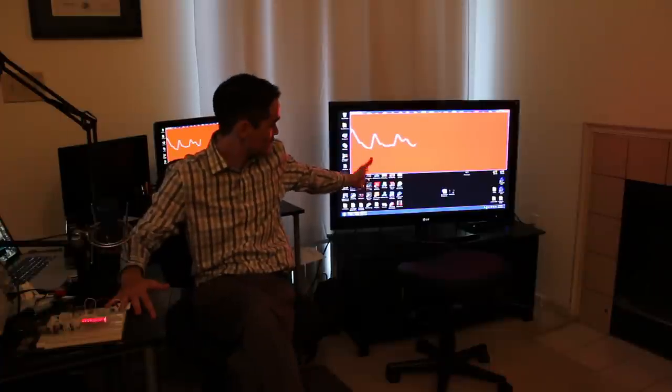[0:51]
Hey, what's up, guys? In this video, I'm going to show you how to build a circuit with an Arduino to monitor your heart rate using an infrared LED and detector. The idea is that the infrared LED shines infrared light into your skin, and as blood travels through your veins, the light is reflected back and detected by the infrared detector. So it's a pretty cool circuit, and let's test it out.
I'm going to lay my finger here across the LED and detector, and then we should see my heart rate. Down here, I have some LEDs that correspond to my heart rate. That information is also transmitted to the PC here, where we're running a Processing sketch. And then, of course, it goes down the HDMI cable to the TV up here, so you can see everything here. So it's really cool.
It's a cool project involving a lot of components, and I'll break it all down for you: the detection, the amplification, the filtering, the Arduino part, everything, including the Processing sketch. So let's take a closer look at this circuit and see what's going on.
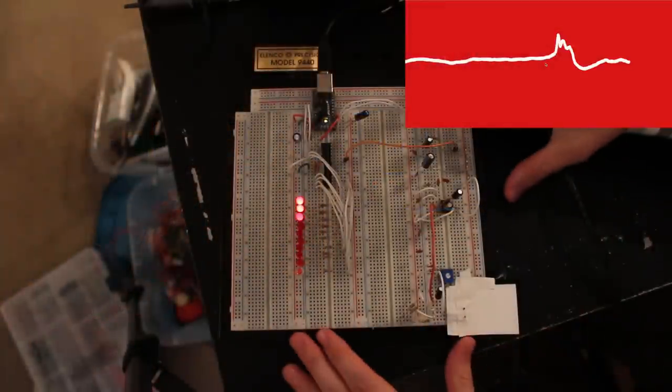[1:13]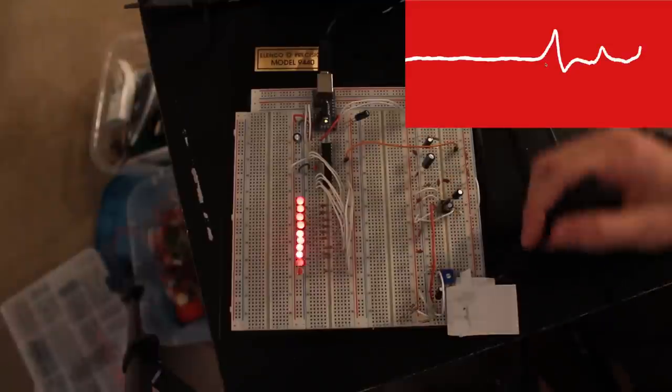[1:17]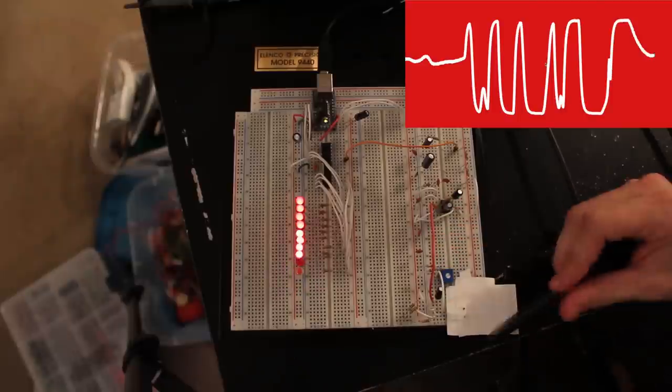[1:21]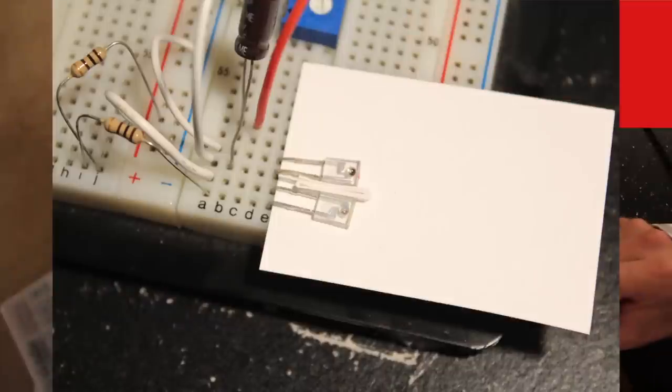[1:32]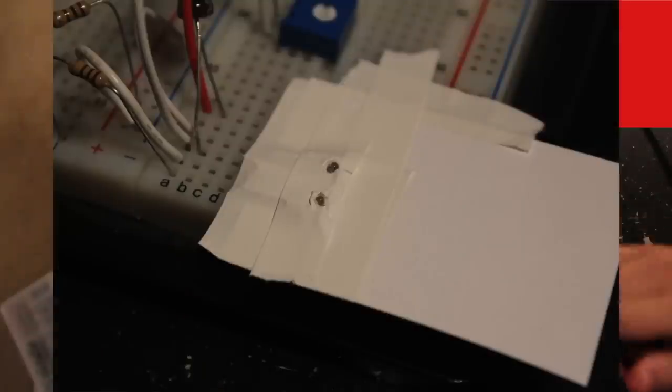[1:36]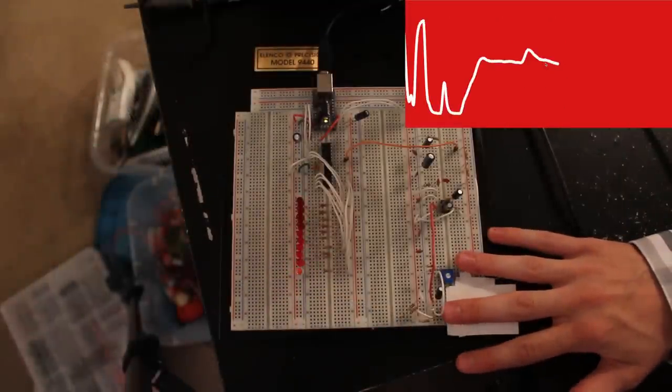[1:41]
Okay, so here's the circuit. And like I said before, there's not too much to it. It's pretty simple. Down here is where you put your finger; this is the infrared LED and detector. It's all taped off like this so that the detector only sees reflected light back from the infrared LED. There are two holes here: one is for the detector, the other is for the LED. It's all taped off to get rid of any ambient infrared light that might be picked up. And it's not perfect.
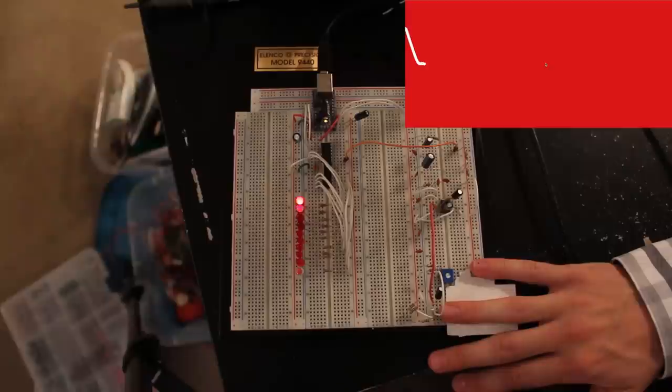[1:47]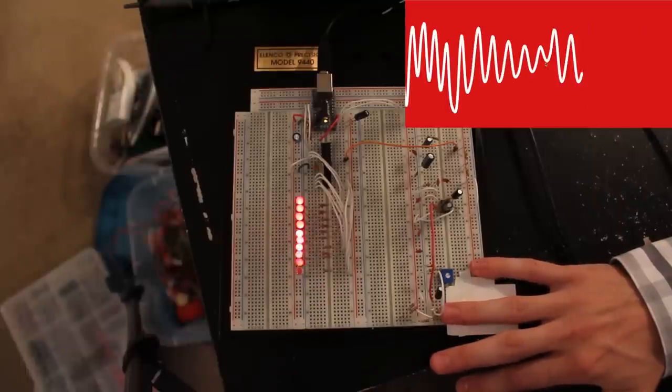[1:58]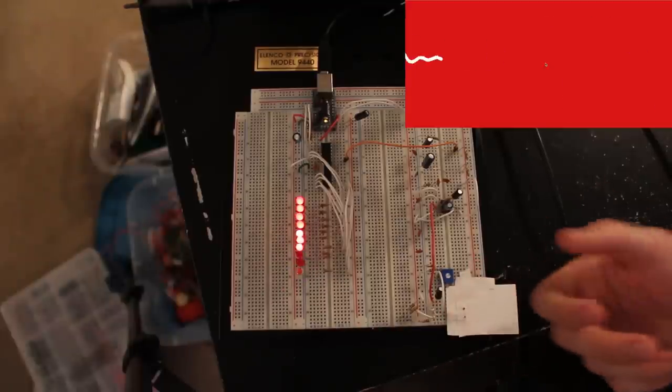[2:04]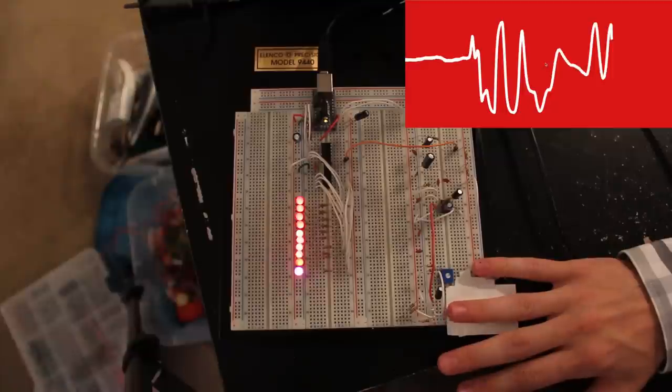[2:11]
If I actually get a lock on the measurement, you can see that. Okay, so it's locked on. But it's not a perfect setup here, because even if I bounce my finger on it or apply varying pressure, it goes crazy. So maybe a better way to do this would be to put this circuit on a clip somehow, so that you would have constant pressure applied and get rid of that variable. Even if I lay my finger here, if you're bouncing around, it's not perfect.
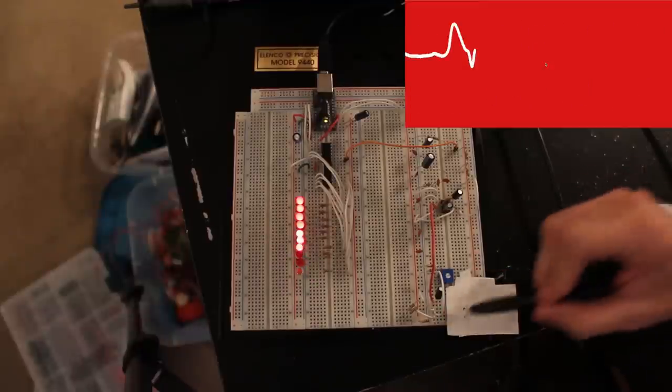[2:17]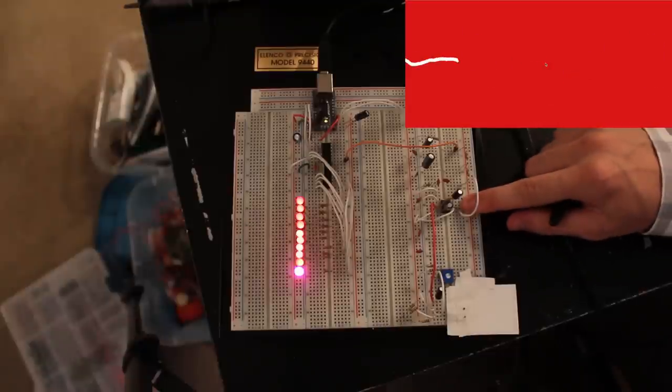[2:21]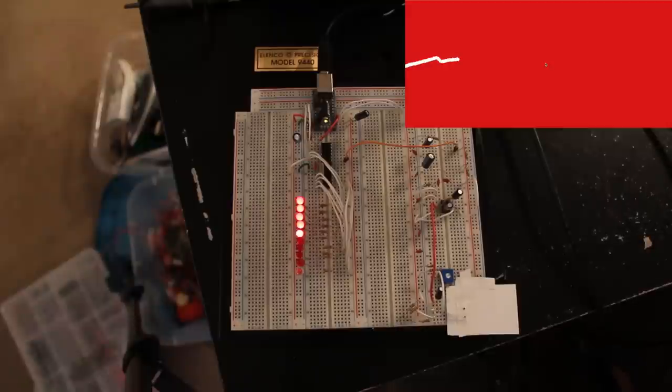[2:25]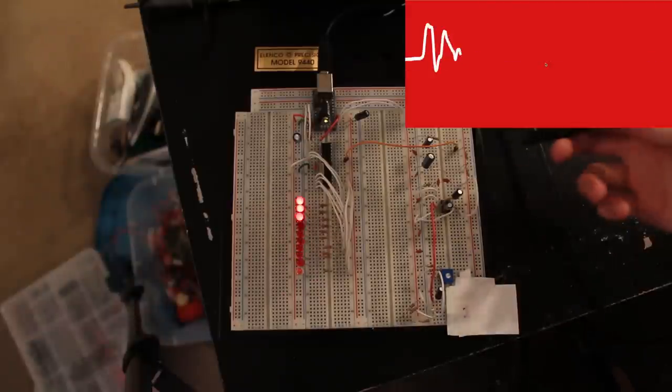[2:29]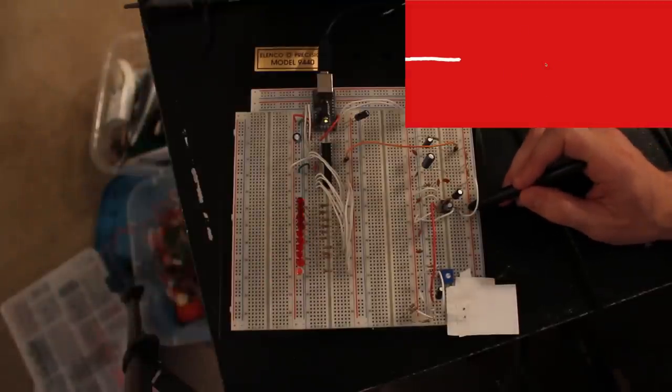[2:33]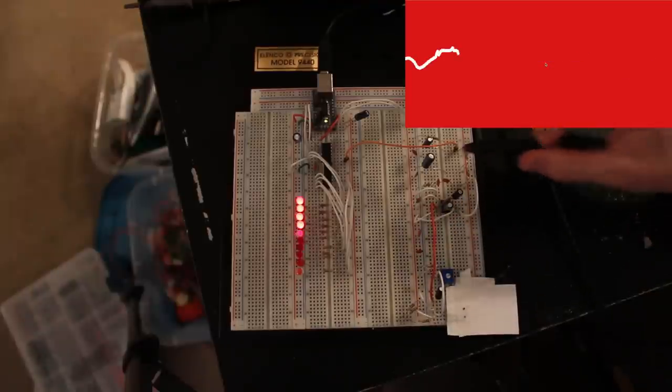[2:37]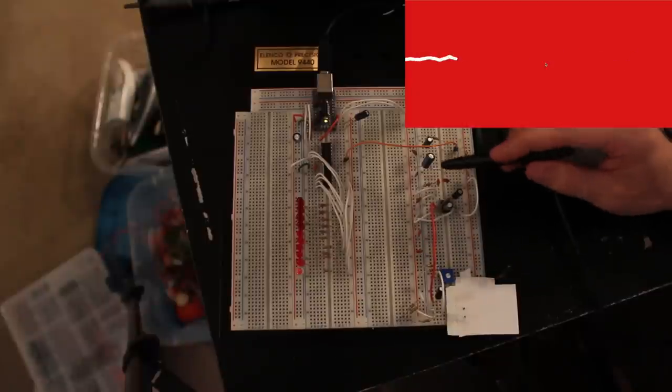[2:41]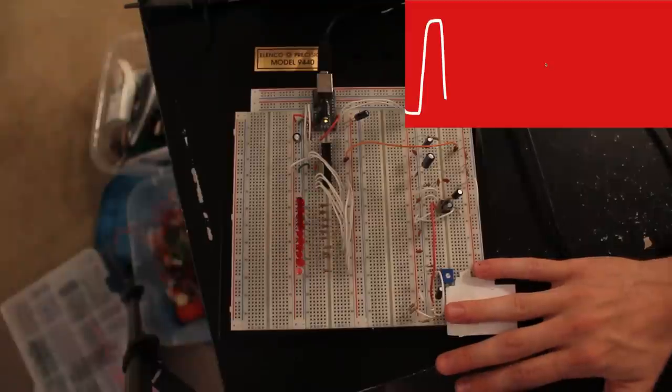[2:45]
But anyway, the output of that then goes over to an LM386 amplifier. This is a pretty cool amplifier. Usually it's used for audio applications, but in this case it works great. This was directly from my whistle detection circuit. So it goes into that, then it goes through a two-stage low-pass filter here. The corner frequency of each of these is about 16 hertz, and your heartbeat is slow, so it's perfect.
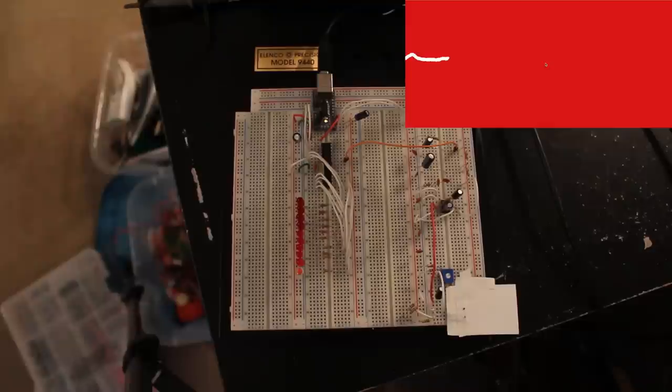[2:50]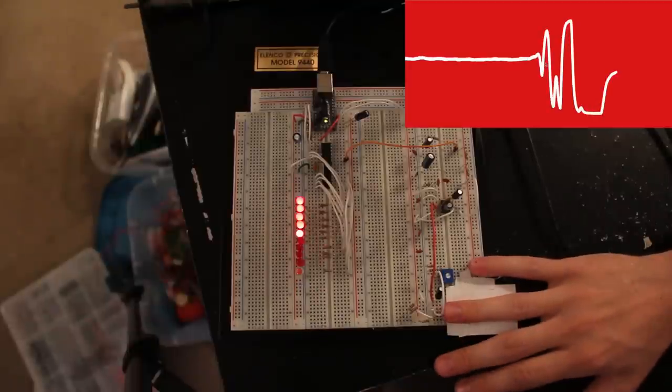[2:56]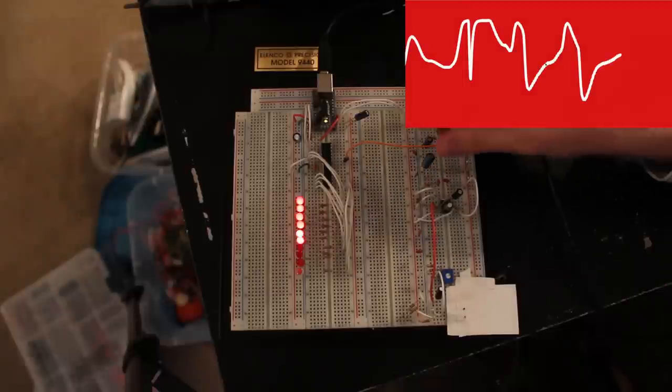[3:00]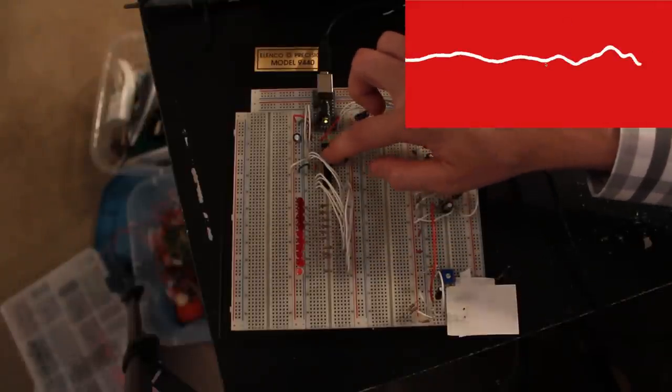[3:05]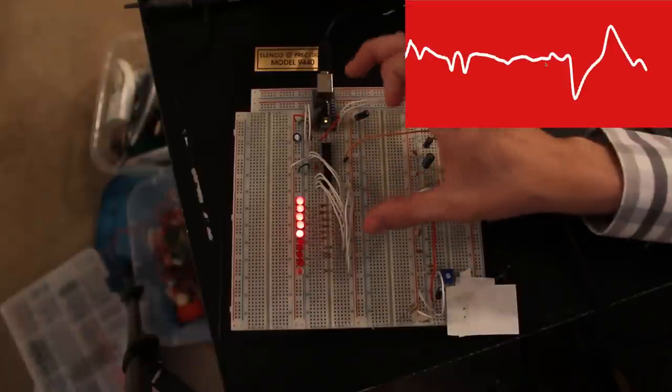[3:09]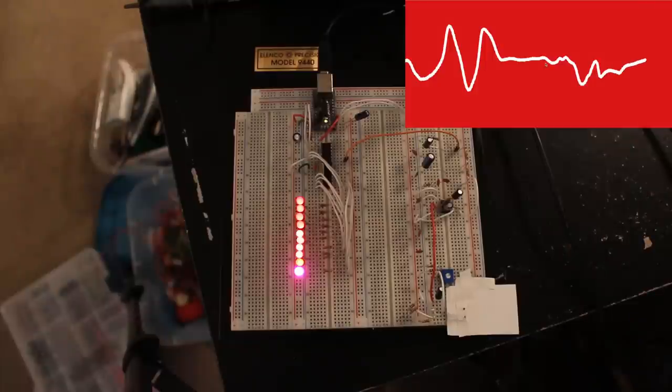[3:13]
One thing you should know about infrared light that's given off in the ambient is that it contains a lot of high frequency content. So it might be kind of cool to show you that. But before I do that, the output of those two low-pass filters feeds into an analog input on a standalone Arduino over here. This is the same thing as your Arduino Uno board down here, except on a breadboard. And then we have 10 LEDs. Let me show you that real quick.
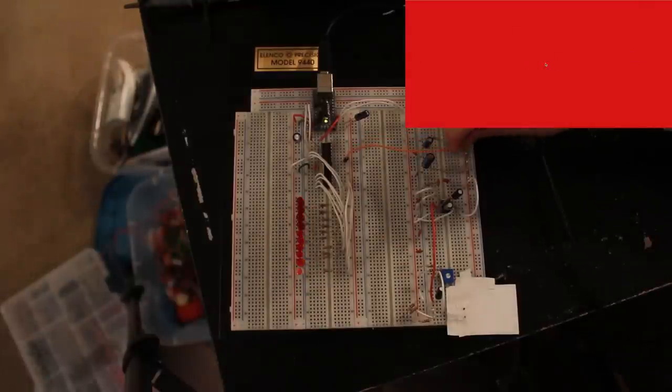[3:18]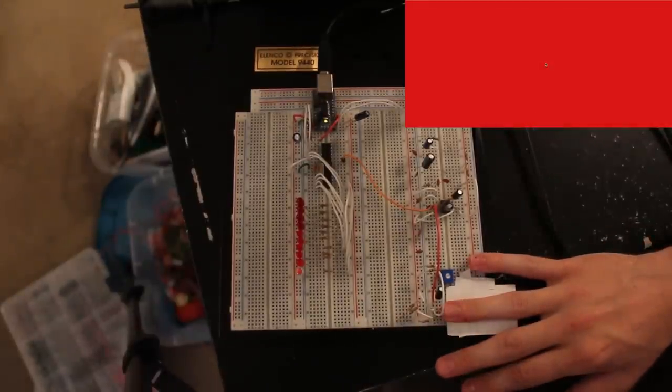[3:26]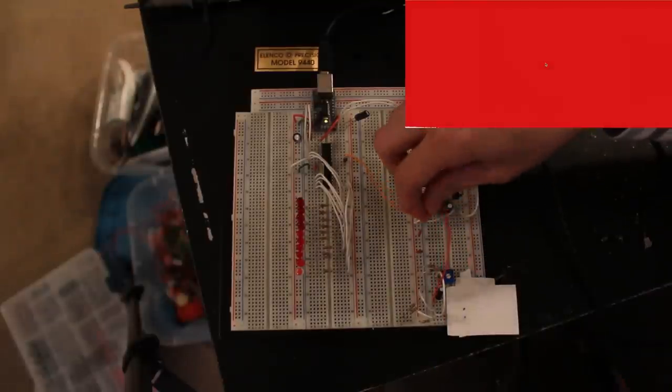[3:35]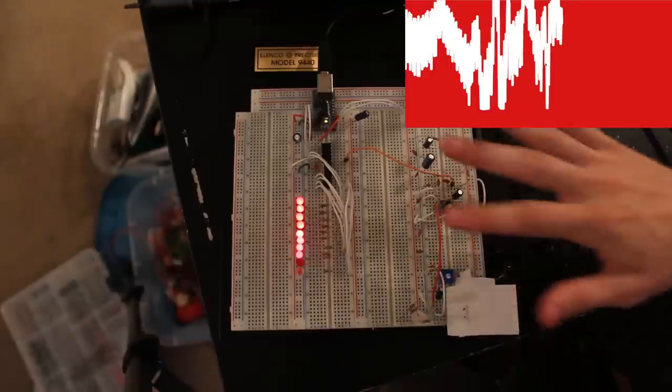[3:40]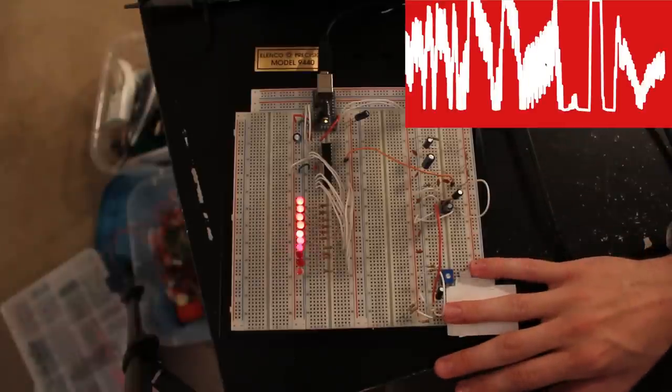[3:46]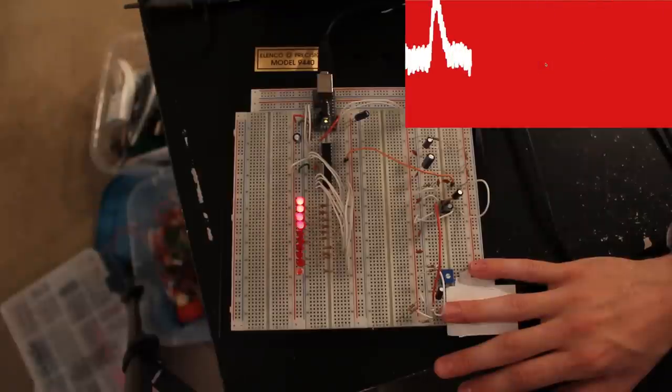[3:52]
Let's show you first the output of just the infrared detector. You can see it's way down there in the mud. You can't even really see it. So let's look at the output now of the LM386. By the way, I'm going to go to the whiteboard in a second and show you what the connections are. So here's the output of the 386, and you look at all that noise. You can sort of see the heartbeat signal in there, but it's just covered in 60 hertz noise.
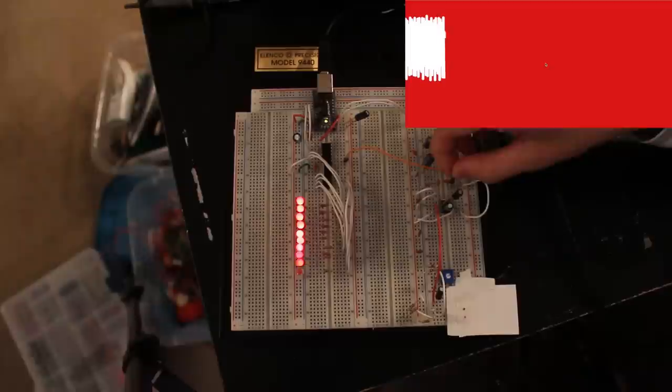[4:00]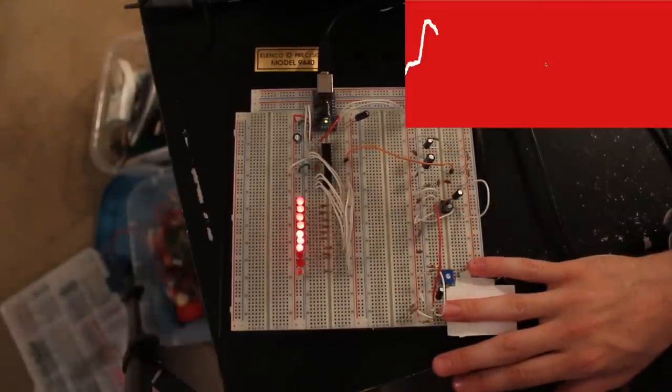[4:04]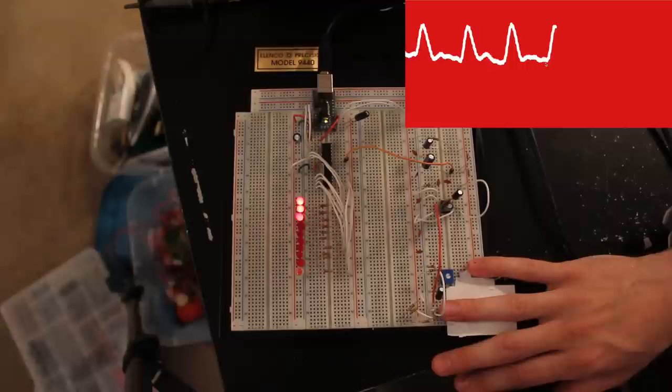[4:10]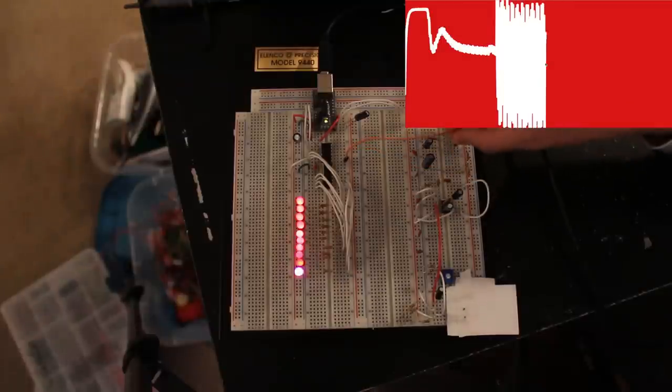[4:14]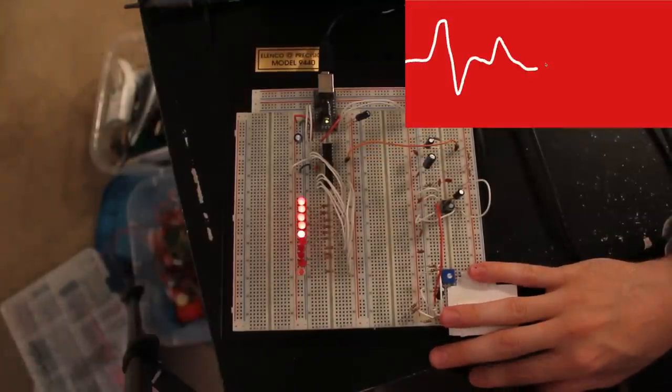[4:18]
Let's look at it after the first low pass. Now it cuts all that off, but you can still see it's a little jittery. It did a pretty good job of filtering most of it out, but it's still there. So I put it through a second low pass, and let's look at that. Okay, and that is pretty close to perfect, at least for display purposes. So it's not too bad. Anyway, that's the circuit.
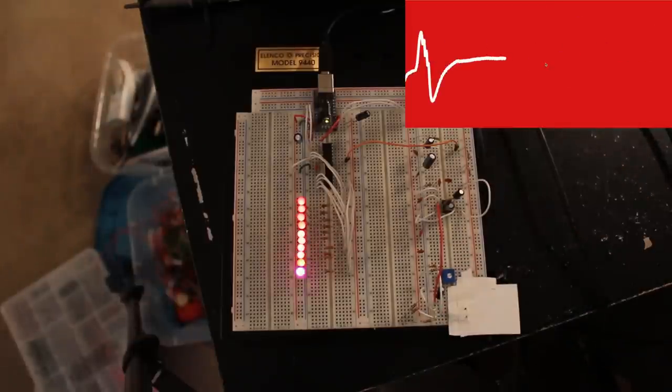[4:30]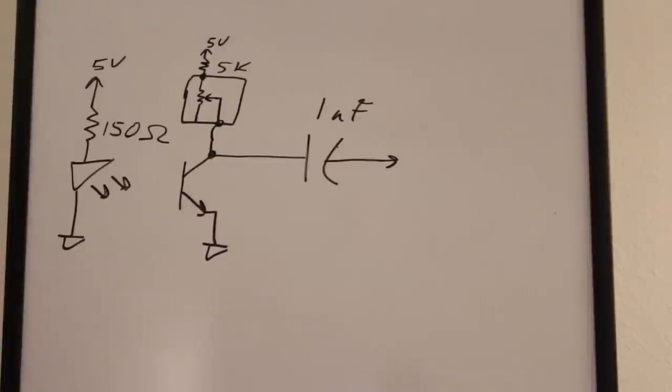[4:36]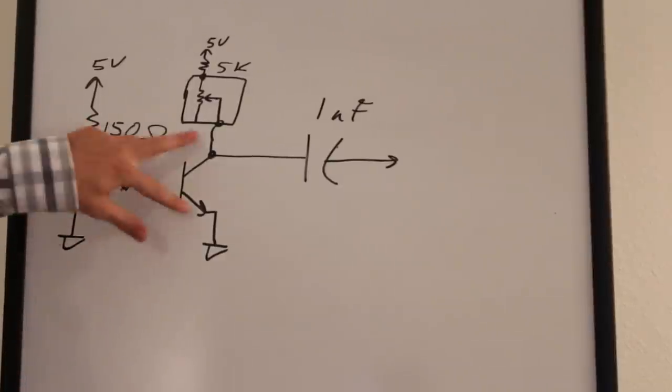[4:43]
Let's go to the whiteboard, and I'll show you some of the connections and how everything's hooked up. Okay, the first part of the circuit is the infrared LED and infrared detector. Each of these devices has two pins, with one lead longer than the other. You'll have to check the datasheet to see which pin is which, and I'll put a link to where you can find those parts in the description. The infrared LED is simple. We're just using a 150 ohm current limiting resistor.
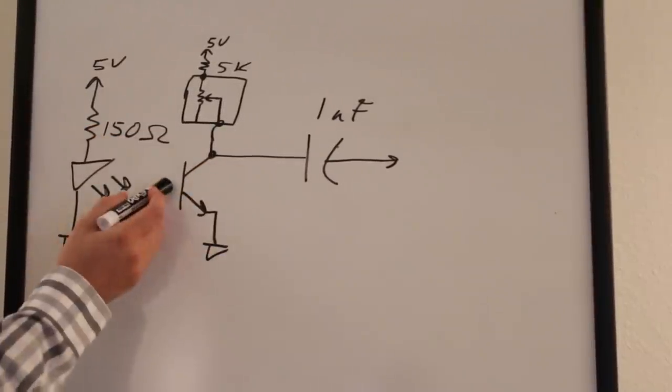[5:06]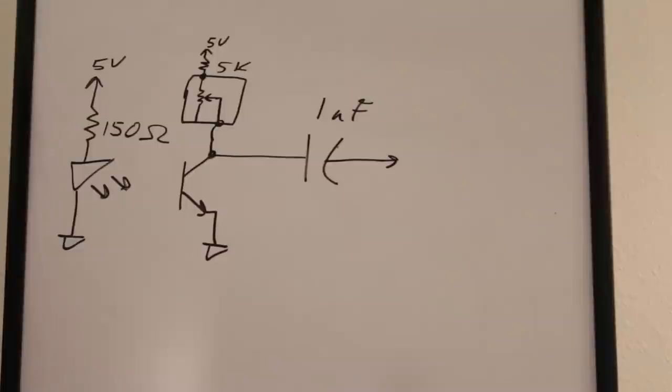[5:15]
The detector, is it again just two pins? It acts like a transistor, except the base is controlled by the amount of infrared light that it receives. Okay, so that's how it passes current through from the collector to emitter.
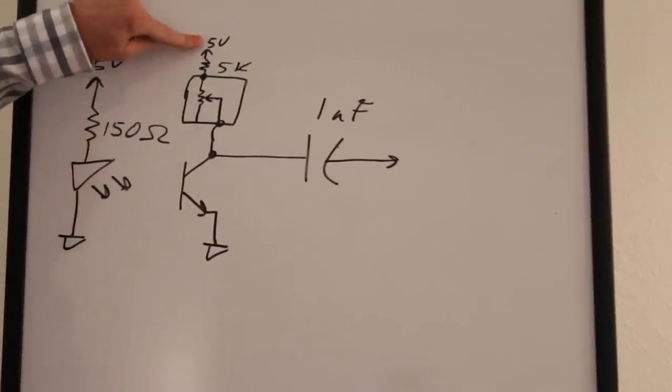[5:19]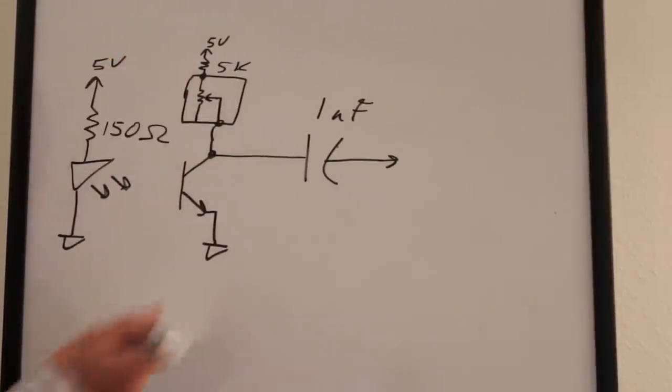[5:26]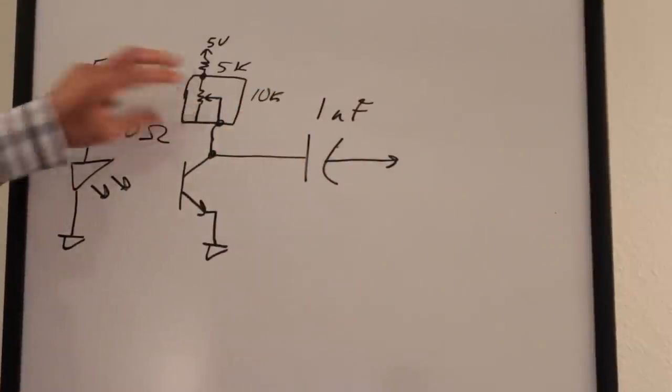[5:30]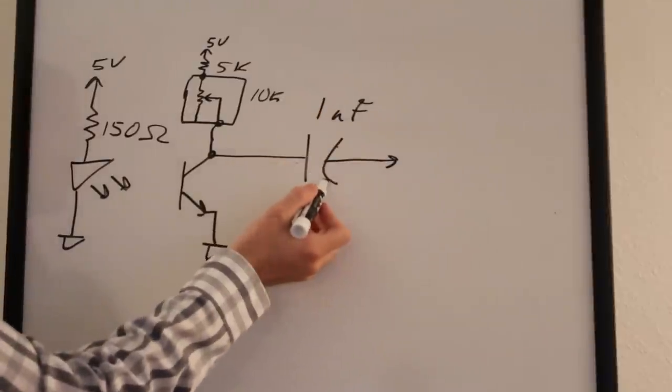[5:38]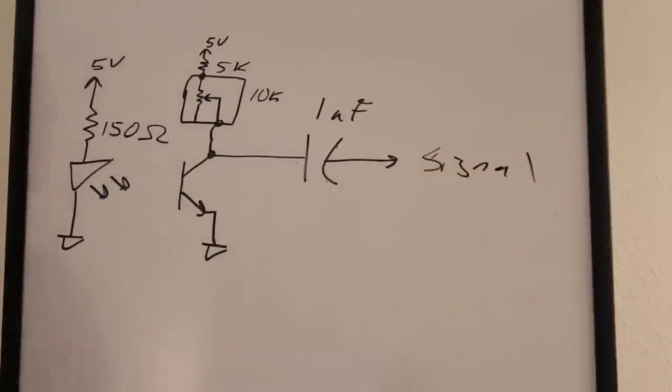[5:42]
So basically what we have here is 5 volts connected through a 5k ohm resistor through two pins off a 10k potentiometer. But since we're only using two pins off it, it's connected as a rheostat. And then from that, we're connected to the collector here, and then the output of this collector through a 1 microfarad capacitor. And then out here is our signal, okay?
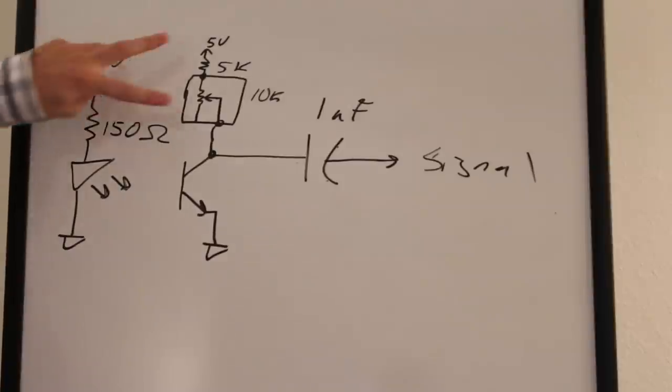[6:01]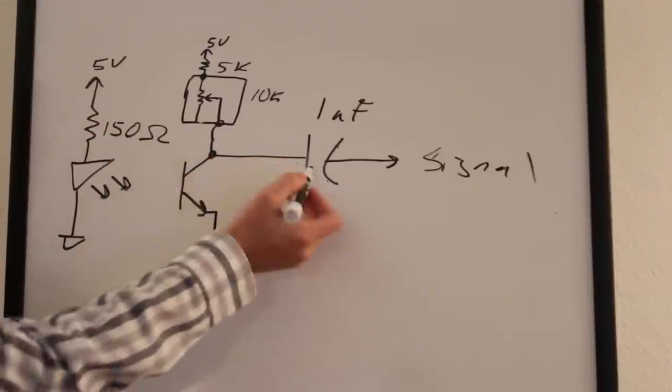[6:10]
Now, a few things about this. You can play with this resistor here, and that determines how much infrared light is going to be shined up into the skin. Just be careful you don't exceed the maximum forward current of this device. You can play with the resistor settings here, and that determines the sensitivity of the detector and your signal here. And you can also play with the capacitor here.
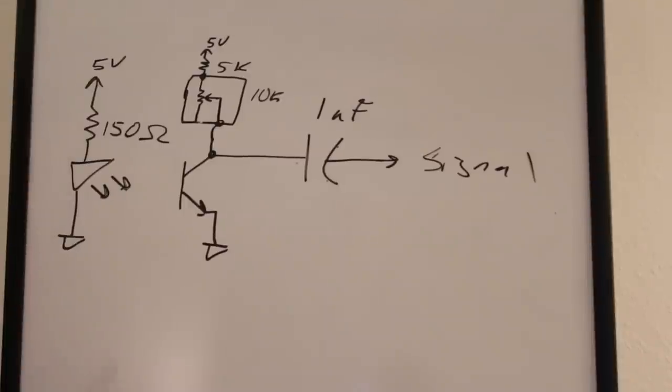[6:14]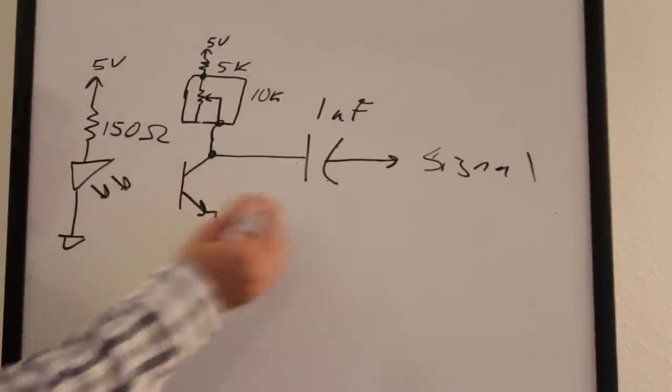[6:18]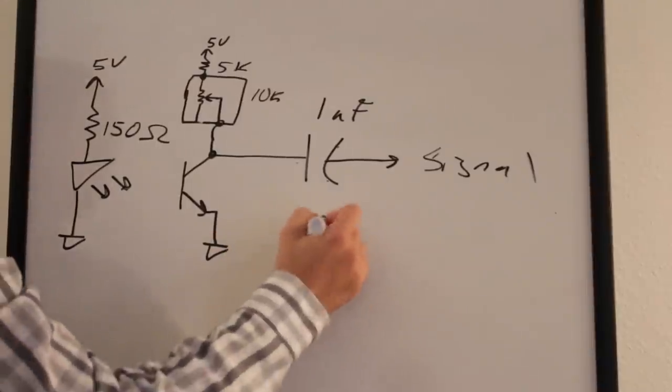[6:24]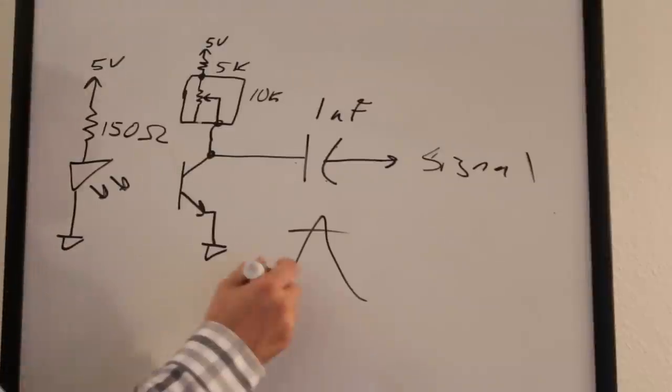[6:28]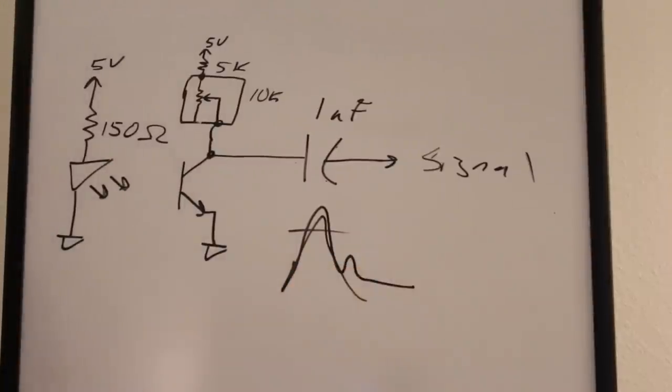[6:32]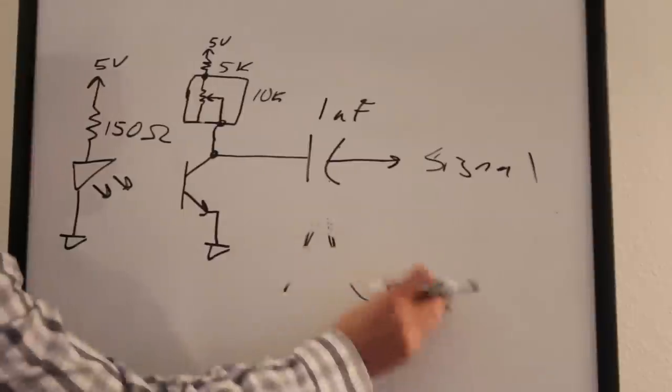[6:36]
So it's kind of a trial and error game until you get the perfect combination of parts here to get a nice solid signal. Now, if you only care about just the peaks of a heartbeat, then that's one thing. If you want a more defined signal so that you see the rise and then that second little hump, then that's going to take some fine tuning. So that's pretty much it on the infrared LED and detector. Let's move on to where this signal goes next.
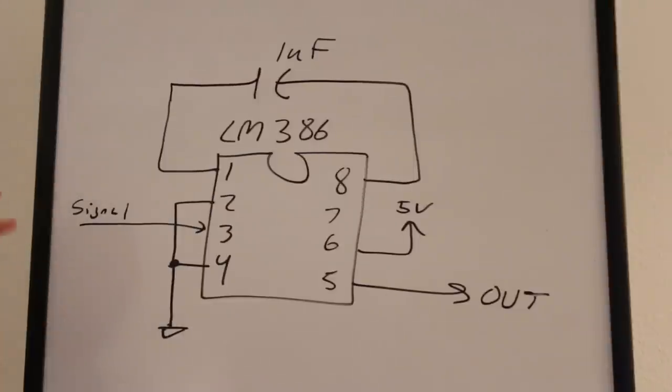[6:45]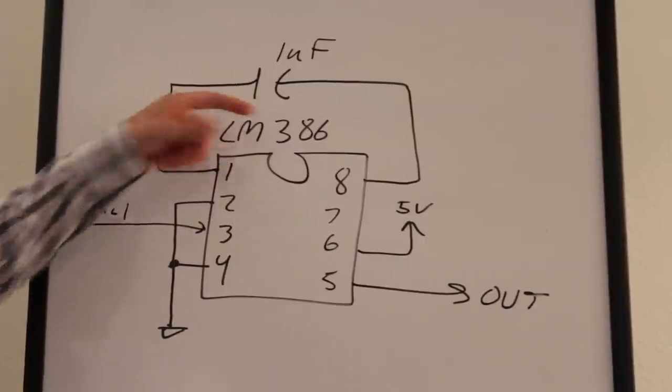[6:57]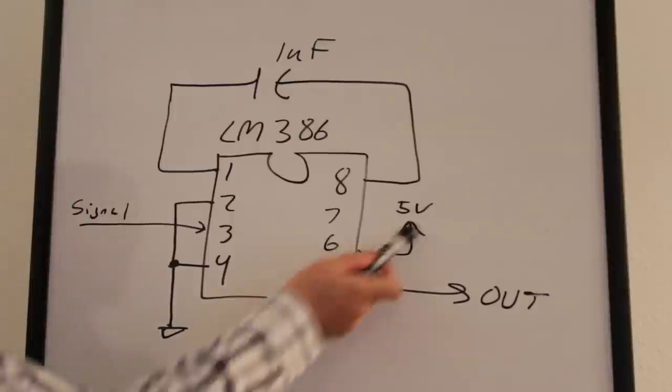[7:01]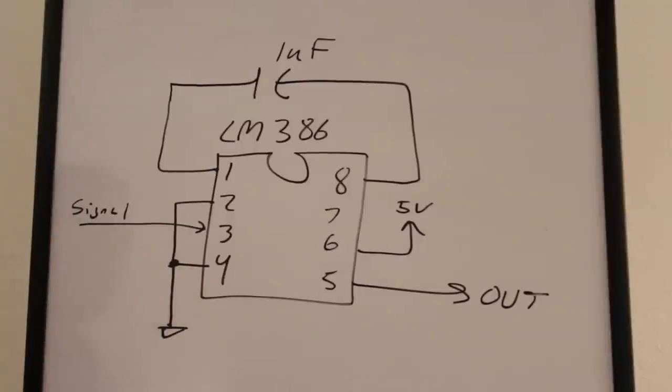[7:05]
Okay, then that signal enters into the LM386 amplifier. It enters in on pin 3, pins 2 and 4 are grounded. Across pins 1 and 8, we put a 1 microfarad capacitor, and this gives the amplifier a little extra boost. Pin 6 is up to 5 volts, pin 5 is your output, your boosted up signal.
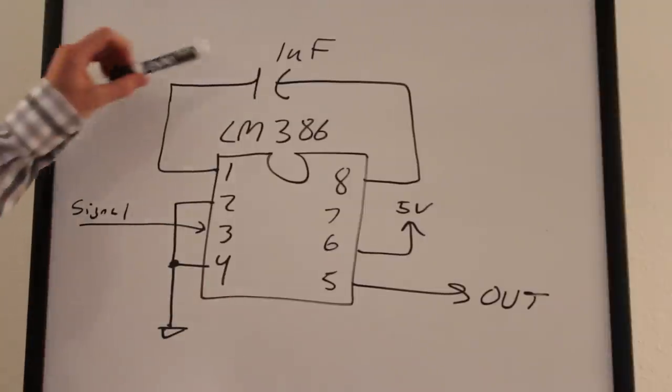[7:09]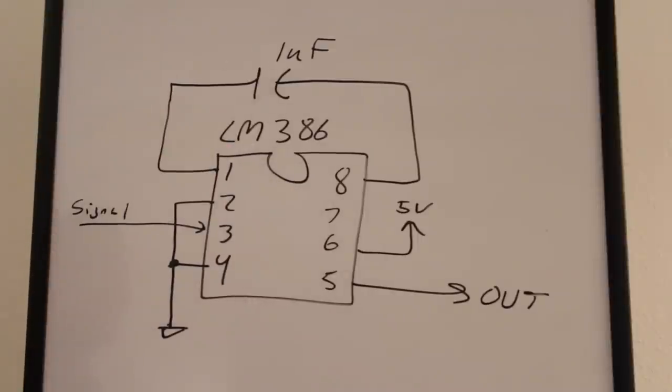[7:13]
A couple notes about this. You may be able to play with the capacitor you put across 1 and 8. You could bring that up as high as, I think, 10 microfarads. I think anything beyond that, the thing is going to be a little unstable. Or you could even try it without a capacitor there.
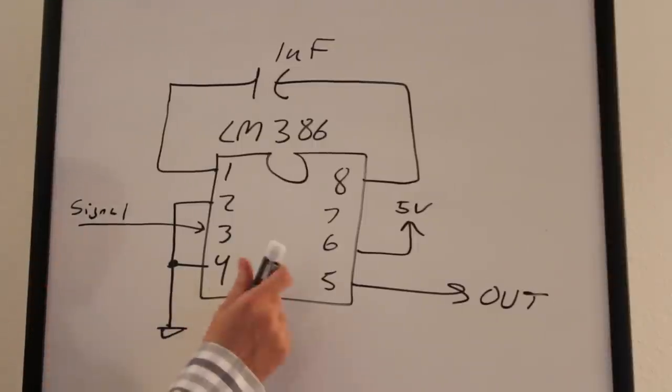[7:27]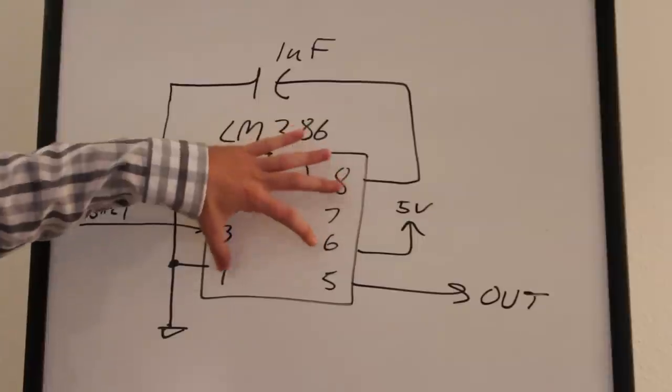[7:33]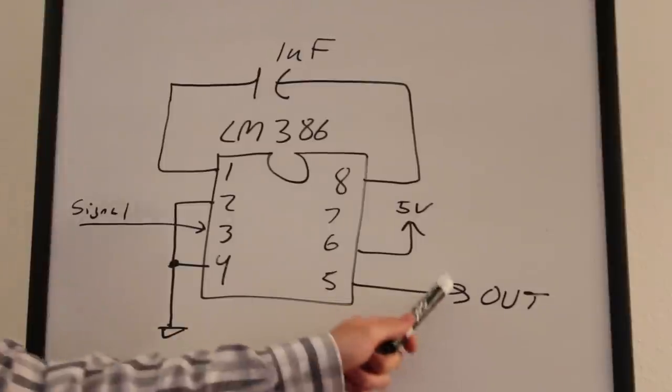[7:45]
Also, you want to make sure that you have a huge bypass capacitor system across pins 4 and 6. Right across these pins, get as close as you can to these with a 10 microfarad, a 1 microfarad, and a couple 0.1 microfarads, just to keep the power supply quiet for this device. And that's pretty much it. The output of this signal now goes to the filter circuit.
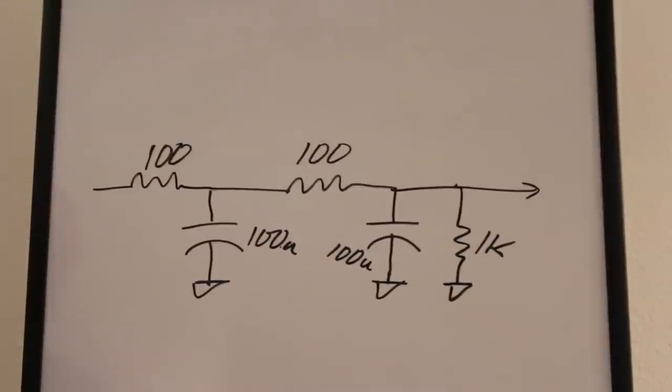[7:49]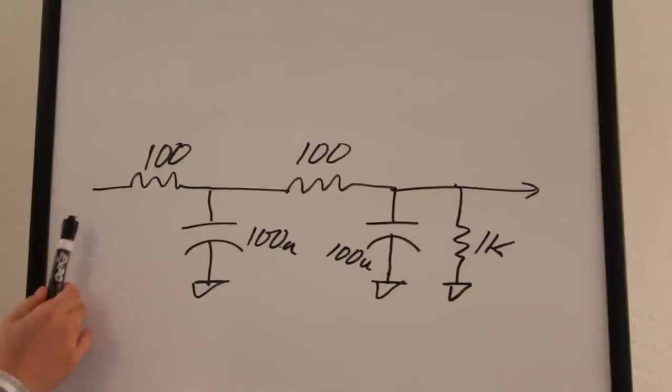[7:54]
Okay, so this is the filter circuit, and the signal enters in right here, and we go through two low-pass filters. This is the first one, this is the second one. And the corner frequency of each of these is about 16 hertz. So 1 over 100 times 100 microfarad times 2 pi will give you about 16 hertz.
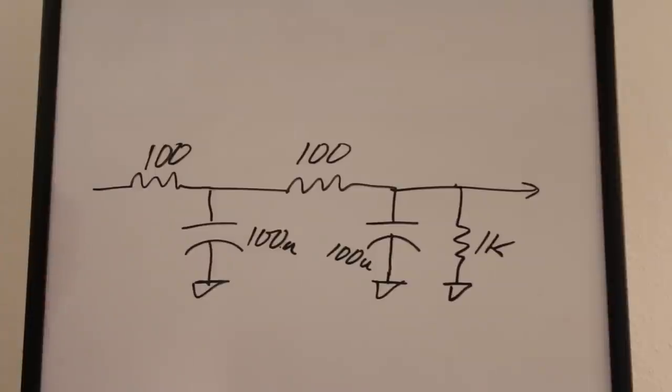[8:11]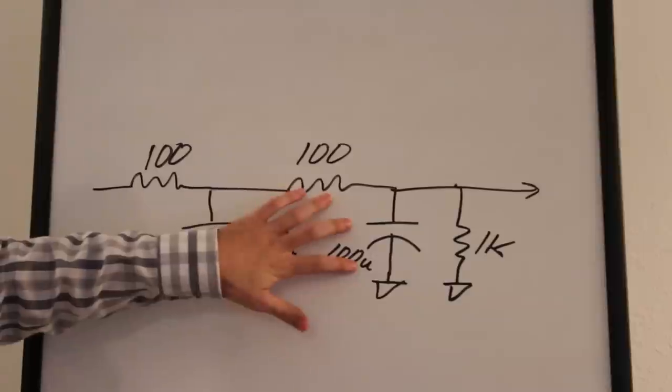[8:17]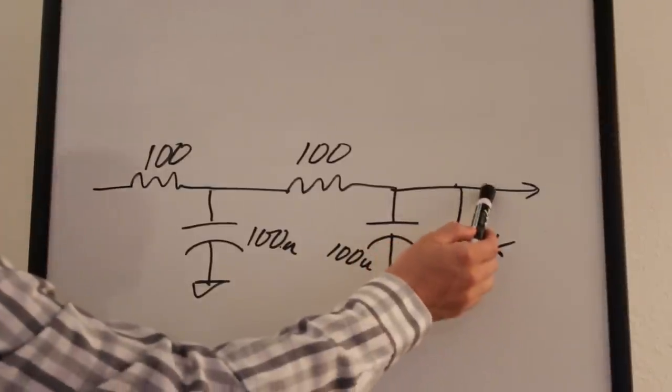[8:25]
And if you want to learn more about low-pass filters or just RC filters in general, I made a video a while back on that. I'll put a link in the description. So we go through two of these. And then I put a 1K over here just to give a little bit of load impedance to this, because this feeds into an analog input on the Arduino, analog input 0. So anyway, that's the whole circuit.
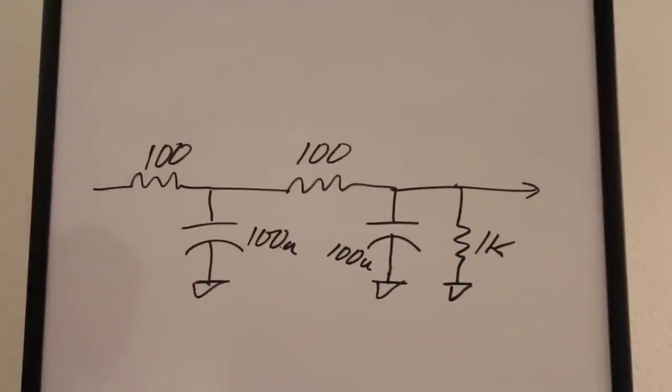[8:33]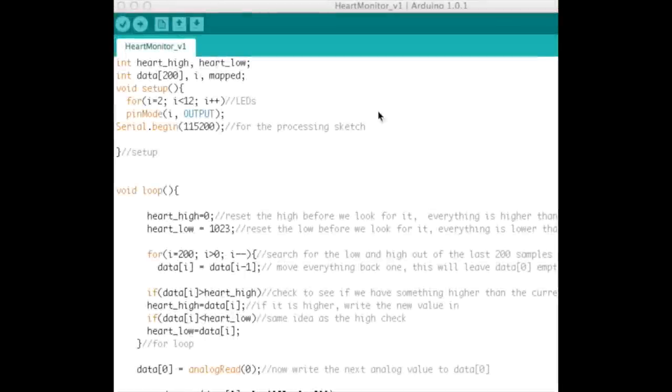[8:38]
And now I think we can check out the code. Okay, so here's the code, and it's pretty straightforward, and I'm going to break this up into two parts. The first part is going to be the Arduino side, and then the second part of the code will be the processing code, which is that cool application that displays the heart rate on the screen.
So first we'll talk about the Arduino, and it's pretty straightforward because right now at this point, we have a nice clean analog input to the board. So you're basically done, but if you want to do something cool with it, I'll explain that here. So first part of the code here, a couple variables, no big deal. We're going to set up 10 LEDs as outputs. I probably could have multiplexed those, but since the Arduino is only doing one thing, I could use all its pins up. And I was being lazy.
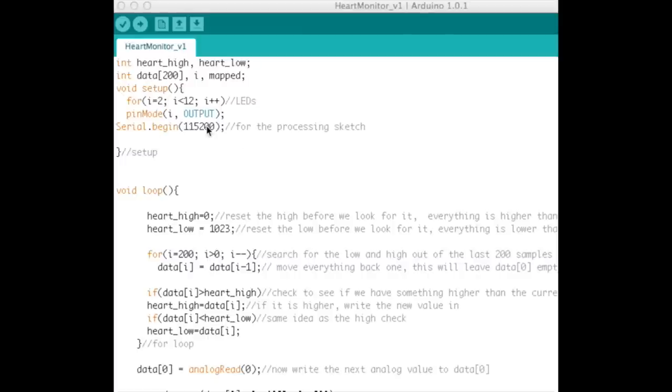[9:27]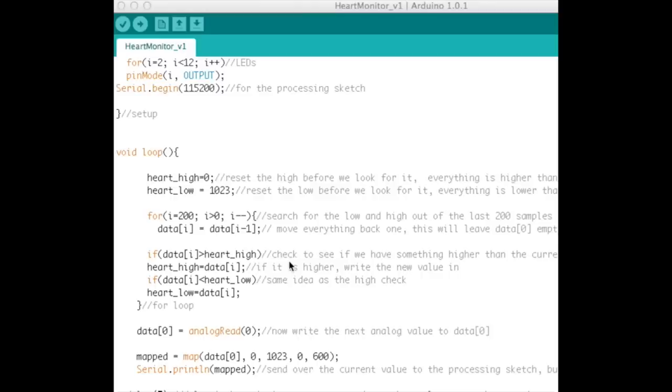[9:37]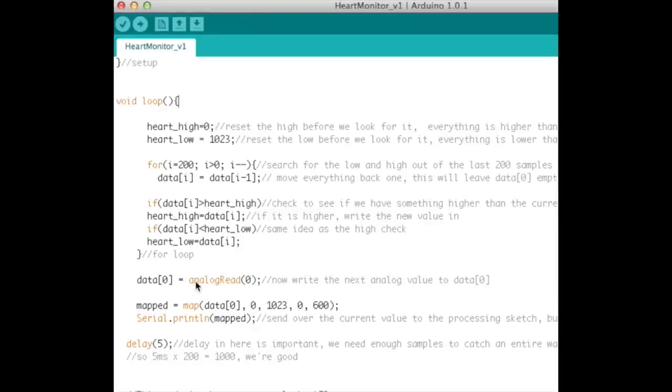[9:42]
So next part, we set up the serial port at 115.2, and this is to send data up to the computer so that we can read it into that application and display it on the screen. That's all there is to the setup. Then we jump into the loop here. So we're going to read in this value for the heart rate, and it has a high and it has a low peak. It's not swinging all the way from 0 volts to 5 volts. It might just be swinging from like 4 volts to 5 volts.
And with those LEDs on the board, I want to swing it all the way from the lowest point to the highest point so that it's not stuck somewhere in the middle. So I want it to swing with the complete swing of the heartbeat. And that's what we're calculating here. So we have two variables, heart high and heart low. And then we do this little function here to search for the low point and the high point in the analog read from the last 200 reads.
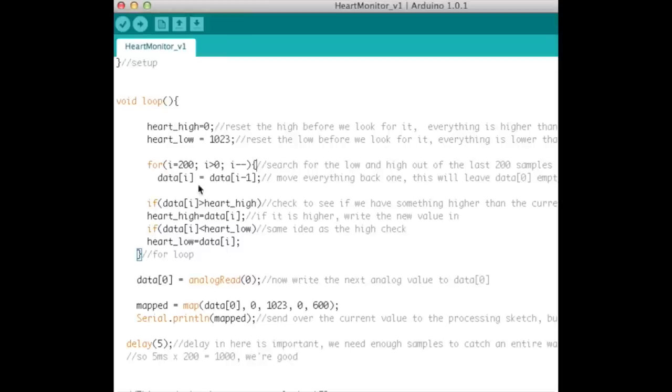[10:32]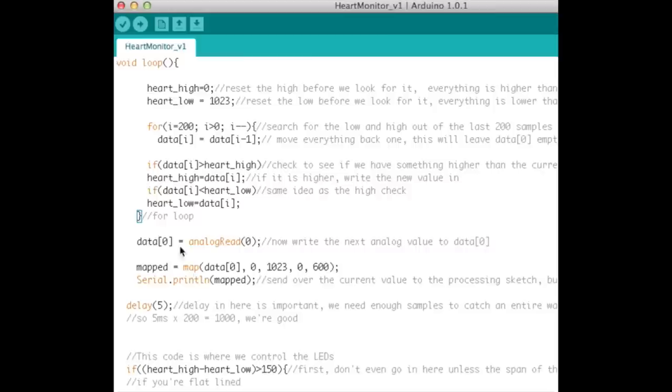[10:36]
Okay, you know what? I'm going to come back to this, because it'll make sense once you see how we do the read. So the analog read is here. We'll skip this and jump down here. So data 0 is equal to the analog read of 0. This is the actual analog signal that's fed into the Arduino. Then we map that value here.
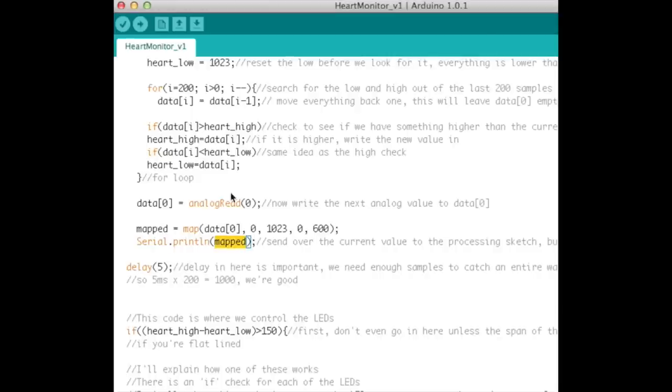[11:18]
So it's an analog value. It's a 10-bit A to D, and so we get a value from 0 to 1023. But we map it from 0 to 600 so that we do a serial dot print line of that mapped value. And this corresponds to the screen size on the other end. So its only purpose is to map it just for the screen on the other end. Okay, moving along here, then we do a delay of 5 milliseconds. And this delay is actually pretty important.
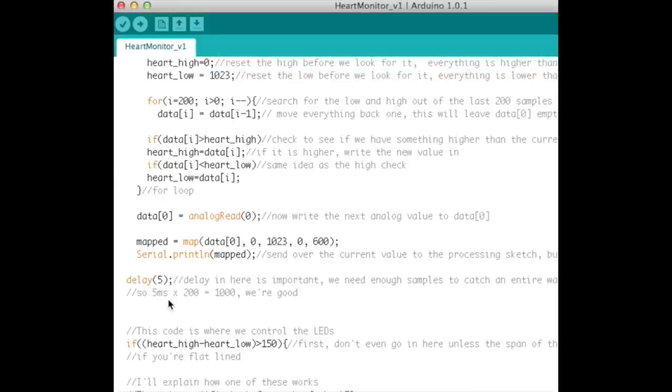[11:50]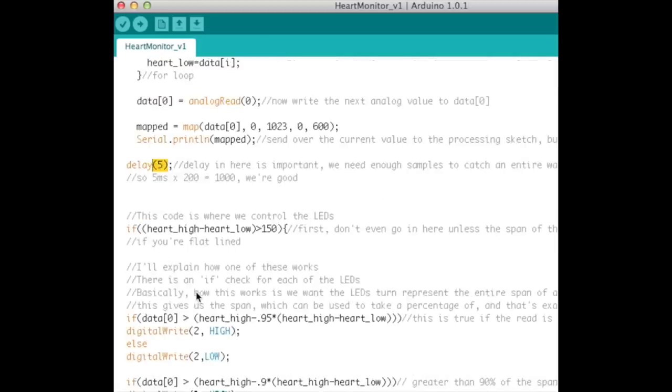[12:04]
If you just made this thing run as fast as you possibly could, then you would have 200 samples of your data very quickly, and it wouldn't be really representative of the entire waveform. So basically what I've done here is made it 5 milliseconds. We collect data after every loop of this thing, so that gives us 200 times 5, which gives you 1 second, so 1,000 milliseconds. And that was the whole point of this, so that we've got 1 second of a waveform, which should be the entire story we need, a high and a low. Anyway, I'm probably rambling here.
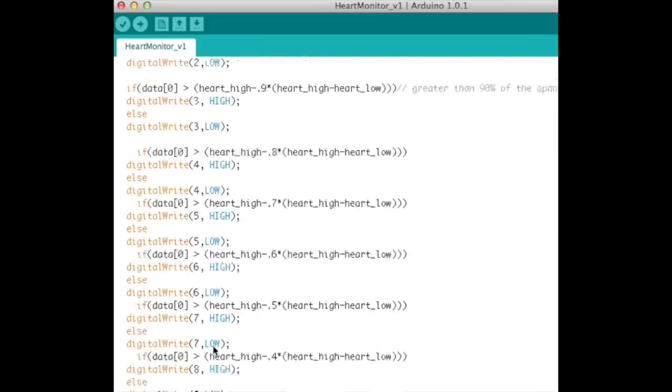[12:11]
All right, so down here we control the LEDs, but I'm going to skip that. So it goes in, it controls all the LEDs, and then it comes back here. So I wanted to show you that we store the analog value in data 0. Then we jump into this thing here. And this is for i equal to 200, i greater than 0, i minus minus. So this starts at 200 right here, but it's equal to the one right below it. So if it were going through this for the first time, it'd be data 200 equal to data 99.
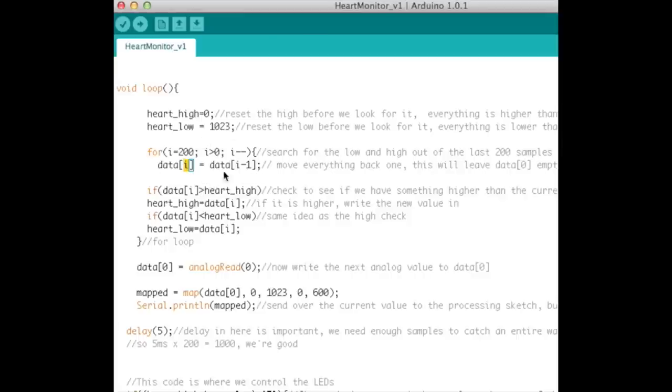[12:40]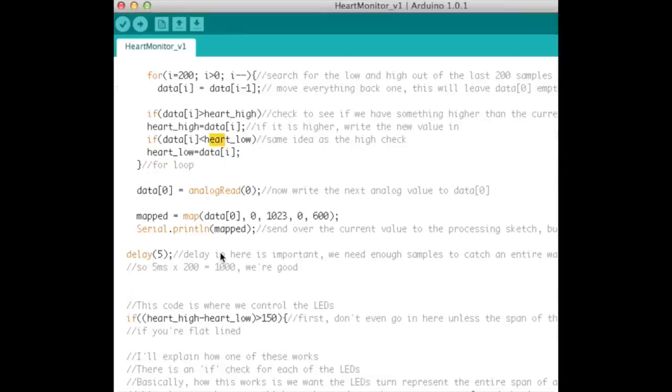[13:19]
So what's going through this thing is shifting everything up one. So the data in 0 is going to go to data 1. That's why here we store the new value in 0. So it's constantly shifting the data out, so it's always keeping the most recent 200 values. That's the whole point of this code. And the other thing it does is it also searches for the high and the low value within those 200 samples. And that's all it does here. So we get the high and we get the low. Now we have the span of the heartbeat signal. Okay, so that's how that works.
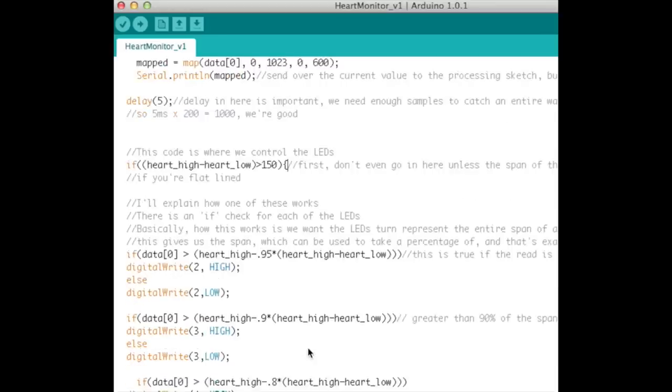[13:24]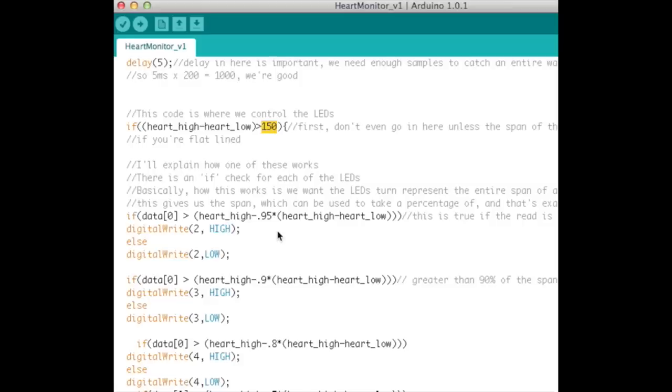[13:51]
And if we jump down here now, by the way, this code's commented pretty well. So if you just go through it, it should explain itself. Down here, if the heart rate high minus low is greater than 150, then jump into this. This is where we control the LEDs and turn stuff on and off. And the reason for this is so that when we're flatlining, it's not going to make the LEDs go crazy. So it needs a span of at least 150 counts, so at least something there. So it detects a heartbeat of something.
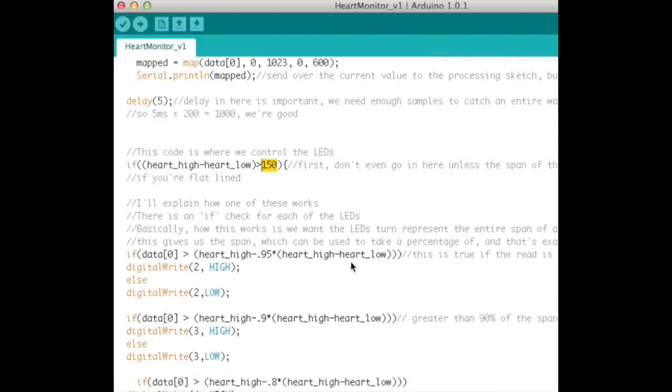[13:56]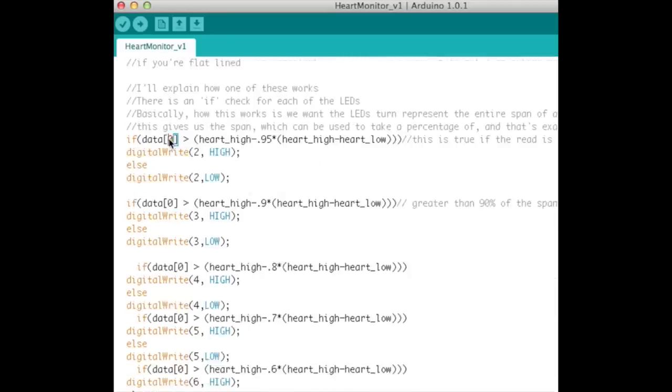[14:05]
All right, and then it goes through and controls all 10 LEDs, and you can see what the common theme between them is. So if data 0 is the current read off the analog input, if it's greater than heart high minus 0.95 times heart high minus heart low. So what we're doing here is taking the span, taking 95% of the span, and then subtracting that from heart high. So the point of this is, like I said before, it's not going to be going from 0 to 5 volts. It's going to be going like 4 volts to 5, or 4 volts to 4.5. So your span is 0.5 volts.
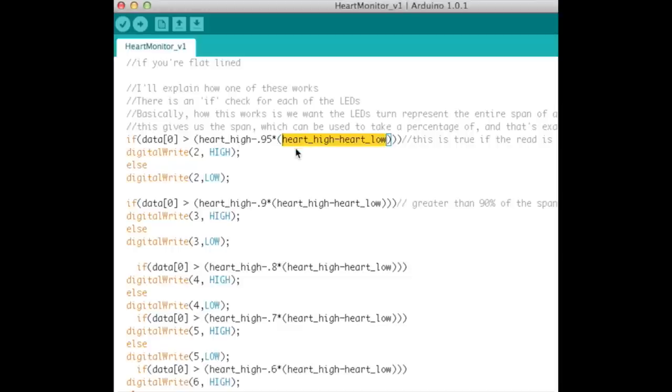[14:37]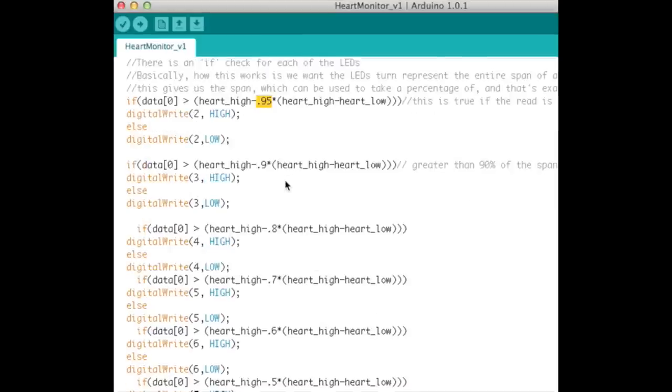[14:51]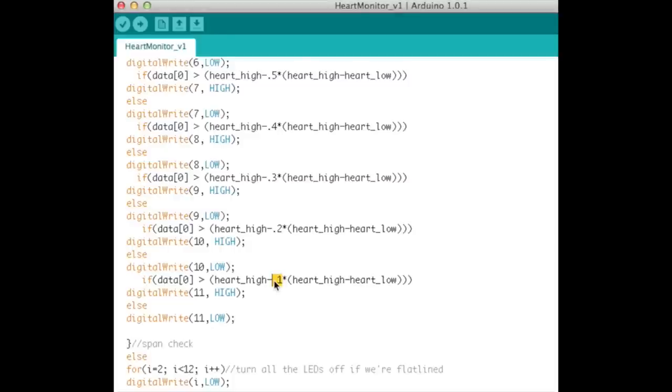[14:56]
So you want the bottom LED here, which is 95%. We want this LED to turn on when we're greater than at least 95% of the span. And then as you go through here, 0.9, 0.8, 0.7, all the way up to 0.1. And this is the last LED that's in the lineup. So when this signal gets at least 10% of the way up, that's when it turns this on. Otherwise, turn all the LEDs off, and that's the span check here.
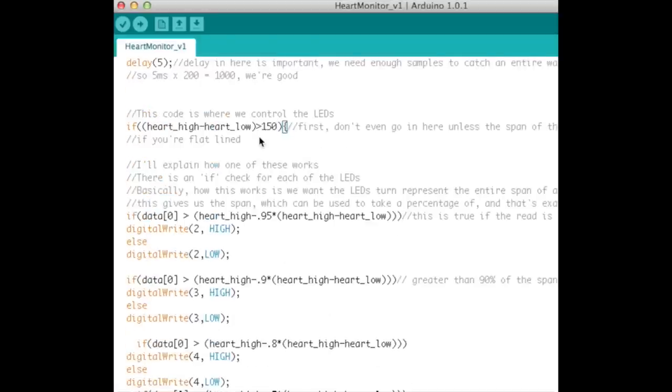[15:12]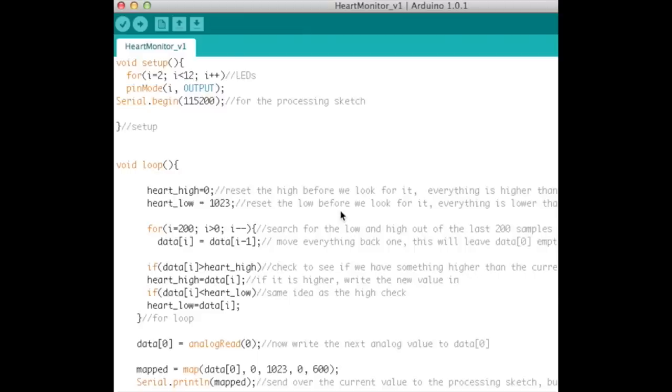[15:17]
So if the span isn't greater than 150, then turn all the LEDs off. Okay, and that's pretty much it. That's the whole code. There's nothing else to it. So let's jump over to the Processing now.
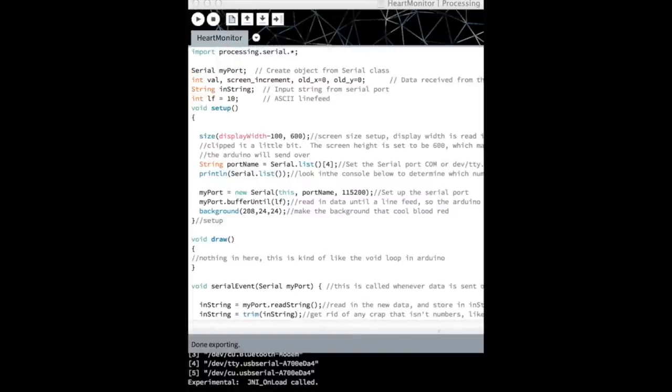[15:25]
Okay, so here's the code written in Processing 2.0 that displays that cool heartbeat signal on the screen. So let's just work our way through this. Processing is a really great compiler to do these sorts of things because it has the same look and feel as the Arduino, and the code is written in the same way. So it's a nice transition from the Arduino to writing code on the computer. And so let's just work through this line by line.
First thing is we import the serial library so that we can communicate to the serial ports on the computer. We're going to call this serial myPort. Some variables: a string that's going to be used to read in the new data, and an ASCII line feed, which is a 10, and I'll talk more about that in a second.
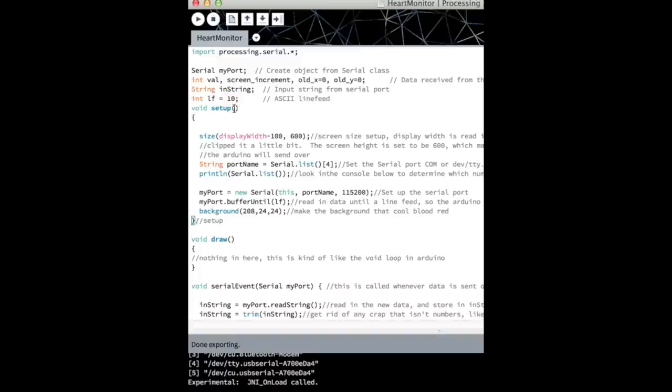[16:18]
Just like the Arduino, we have a void setup. And the first thing we do is set the screen size. So this is our width and our height here. And I decided to use displayWidth, which will read in your screen width, and I subtracted 100 from that to bring it in a little bit. And then the screen height is 600.
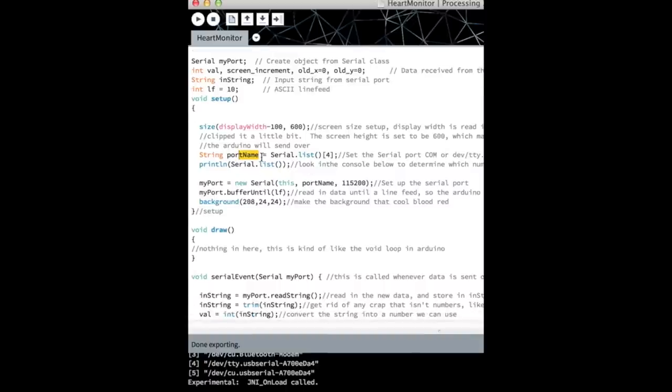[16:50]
String portName. What this will do is name the serial port. Because your computer has multiple USB ports, you could have multiple devices and various different serial ports to choose from. So what this does is set up the port name from the Serial.list, and in my case it's serial port 4. I'll show you what that looks like here in a second. Actually, you can see it down here.
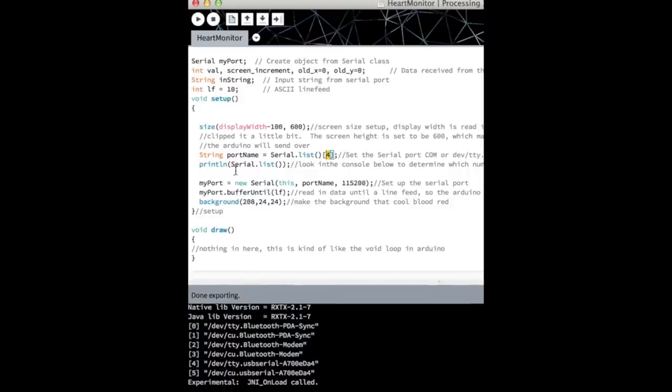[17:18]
So when you run this code, this println Serial.list will print this down here. In my case, my board is connected to this /dev/tty.usbserial port. So what I'm doing here is setting the port name to that value because I know that the Arduino is connected to that port. If you're using a PC, these are all going to be COM ports. This is a Mac, so they all look goofy like this. So anyway, down here we set myPort, which is your serial port, to portName, which is right here.
And then we set the baud rate to 115200 to match the Arduino. And then we do a myPort.bufferUntil, which is setting up the serial port. So when data is available, read until you get a line feed. And that line feed is an ASCII character 10, an integer 10, an ASCII line feed. So that's what we do there.
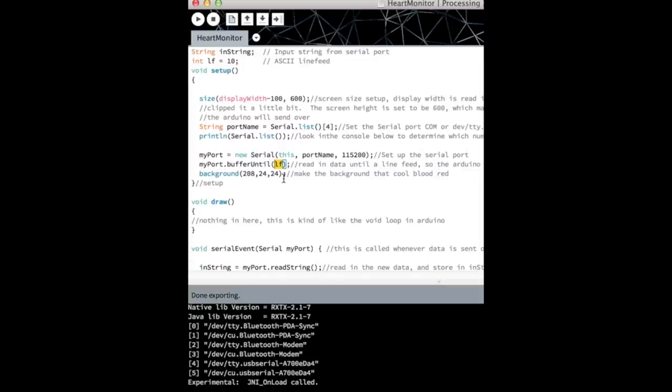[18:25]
Then we set the background to this red color. That's all that does, it sets the screen to that red. And then we're done with the setup. This is the RGB value of that red I used. And then we go into the void draw, and this is like your void loop in your Arduino.
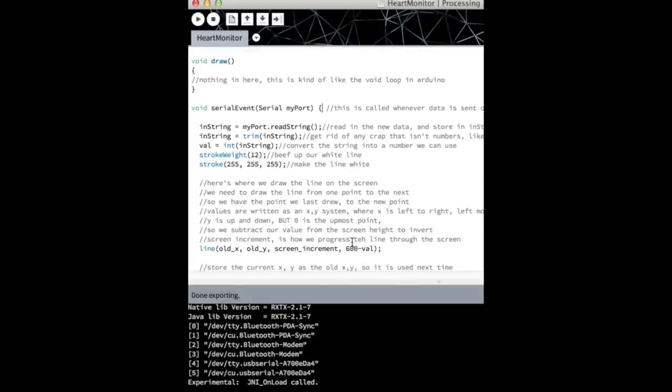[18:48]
Then down here we have this interrupt-driven subroutine. This is called anytime data is ready on the serial port. So when data is available on the serial port, it will trigger this to occur and jump right into this. So let's say data is ready. It'll jump in here. The inString is equal to myPort.readString, so it'll read in all of the data off of it. And then we do inString equal to trim of inString.
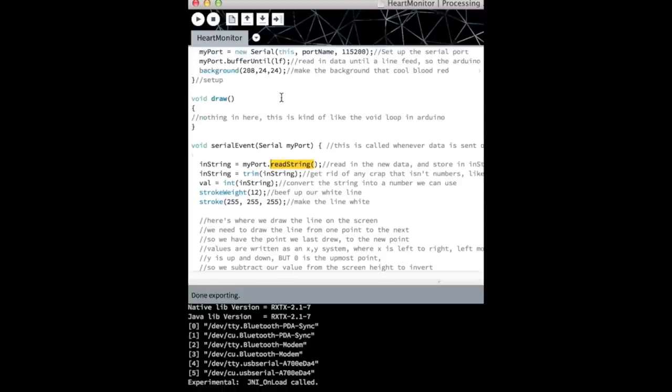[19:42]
And you have to do this because on the Arduino side, you did a println, which prints the data, the number. So say you printed a 1023. That'll come in as 4 bytes of data: a byte for the 1, the 0, the 2, the 3. And then you have a line feed, which is that 10 that comes in too. So we're going to buffer until we see that, and then it stops. But what the trim does is cut off that 10, that extra line feed.
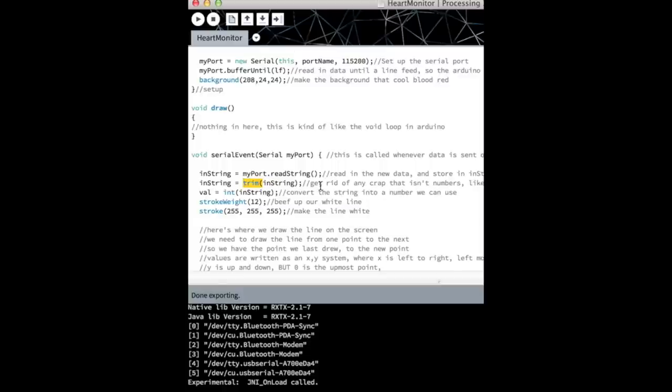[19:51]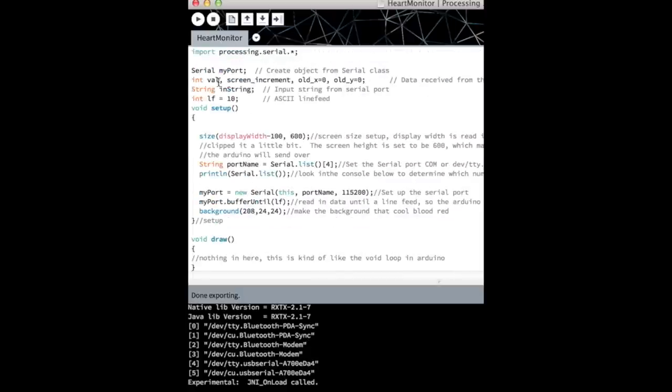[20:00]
And you have to do that because if you didn't, the next thing you want to do won't work, which is val, an integer I set up above, is equal to the integer of inString. So what this does is convert that string, the individual bytes of the 1023, into a 1023 number. That's something we can actually use in this program.
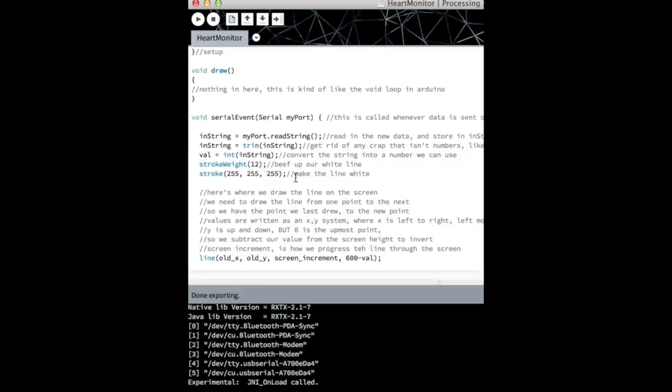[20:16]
Okay, right after that, we set this stroke weight, which is the width of our line. We set the stroke color, which is the color of the line, and this is RGB, so it's all white. And then down here, and by the way, this is all commented out pretty good, so it should be easy to follow. Then we actually draw the line. The way this works is you draw from a point to a point. So we have old X, old Y, to screen increment, to 600 minus value.
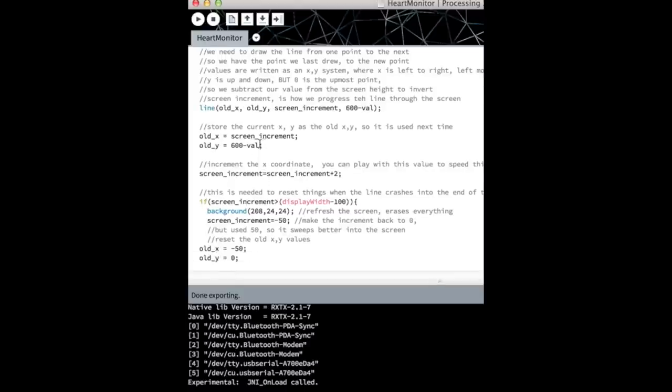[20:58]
Okay, I think I'm going to have to explain a little bit more on what all this is before I actually get into that. So let's just keep going. Old X, old Y. When it draws the line, it sets the next point. So it goes from this to this, but then it sets what it went to as the old, so that the next time it goes through, your previous point was the point it was over here. So it's like drawing a straight line through the screen like that. It's going point to point, but it's drawing just tiny little lines across to make up one line that goes across the whole screen. Hopefully that makes sense. I'm kind of rambling with this a little bit.
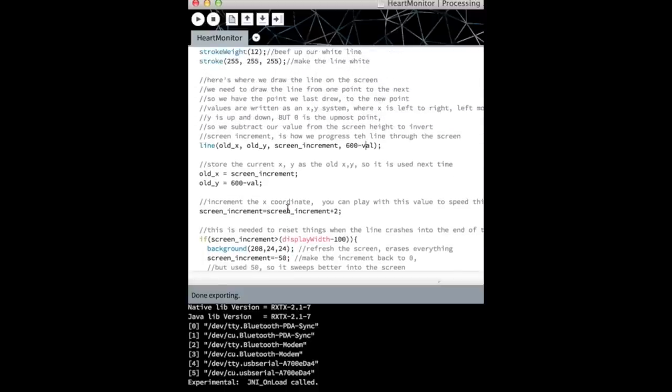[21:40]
Okay. I'm trying to think if there's anything you need to see before. Yeah, I guess we can explain this. So it goes from this point to this point, and screen increment is what we're incrementing every time we get new data, so that it's notching its way through the screen to display the heartbeat signal. And this is the X of the future point, so it's from and to. Then this is the Y of the point, which is 600 minus value. So the height of the screen is equal to 600. The value coming in was scaled from the Arduino. It should be a value from 0 to 600. The reason we have to do 600 minus value is because the top of the screen in Processing is equal to 0. The bottom would be equal to 600. So we just wanted to invert that to go 600 minus value.
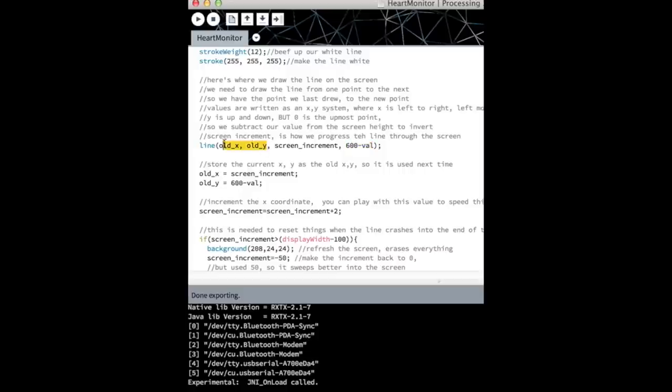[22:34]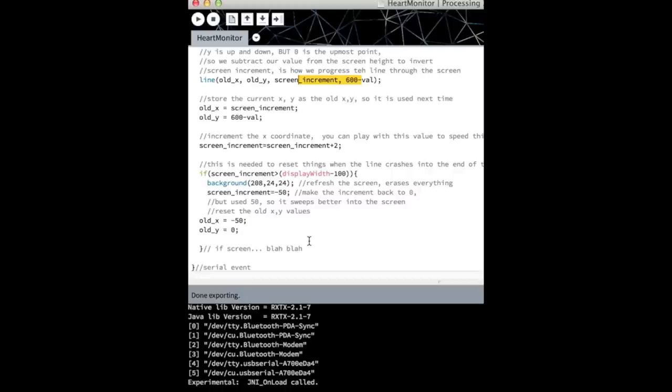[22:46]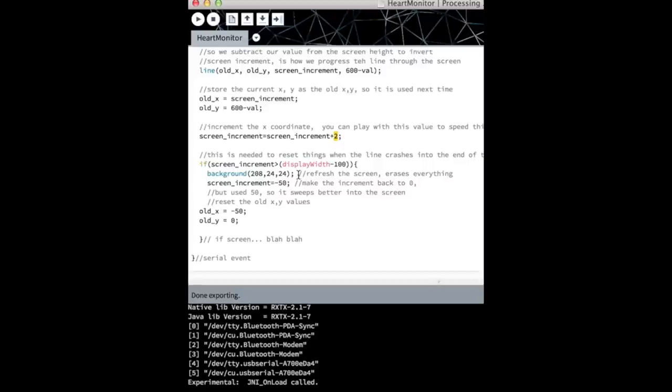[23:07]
Okay, and like I said before, your old X and old Y become where your old point was. So it's just inching along the screen as it draws just a single white line. Then it increments that screen increment. This is what increments to the next pixels, and I use 2 in this case. You could use 1. You could use anything you want to control the speed. But the bigger this is, the more you're going to get kind of straight lines, like a jagged display, which probably wouldn't look that good.
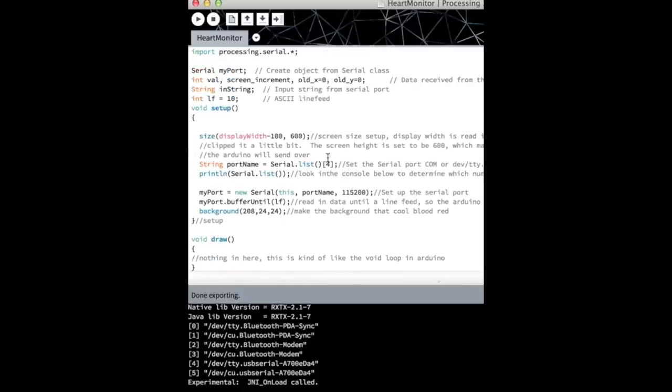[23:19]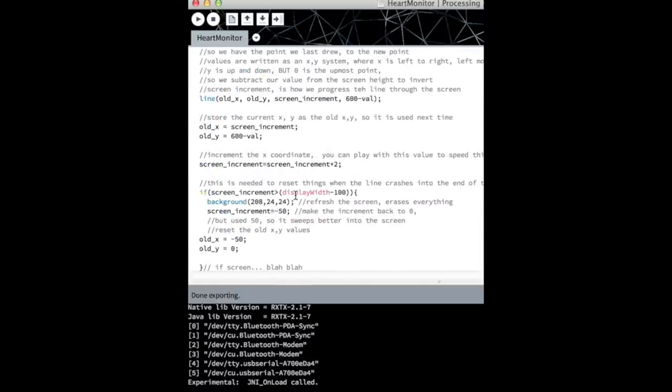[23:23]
Okay, once you hit the edge of the screen, once it goes all the way to the edge, that's what we do here. So if screen increment is greater than the display width minus 100, which is the overall width like we set up here, then go ahead and blank everything out. So we reset the background and then reset the screen increment. And I set it way back. I could have set this to 0, but I set it way back to negative 50, so that it comes into frame a little bit smoother. If you set it right to 0, then all of a sudden you get a big white line coming out of nowhere. So this helps with that. And you can play with these values if you plan on doing this project. Okay, and that's pretty much it. That's the code, so it's pretty simple.
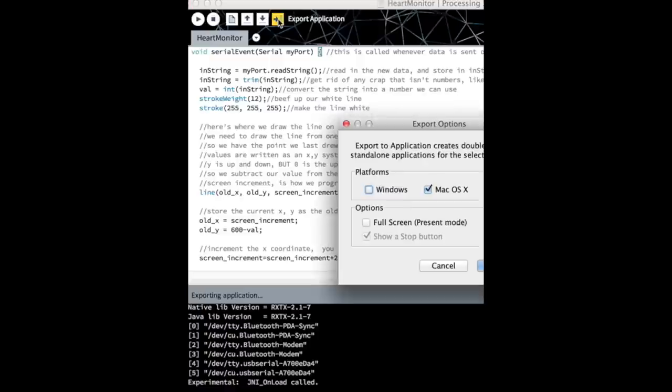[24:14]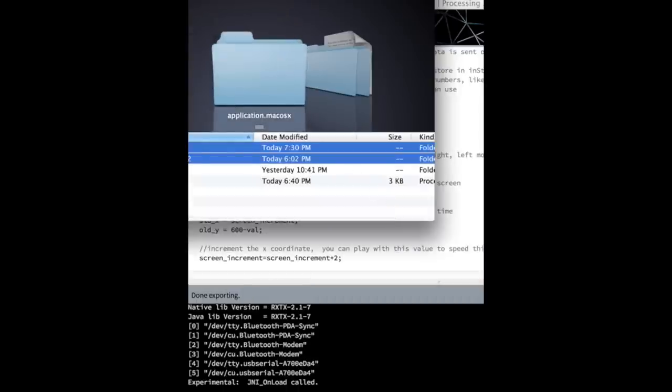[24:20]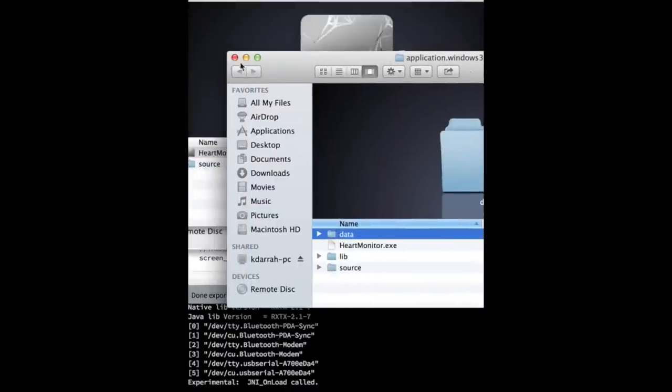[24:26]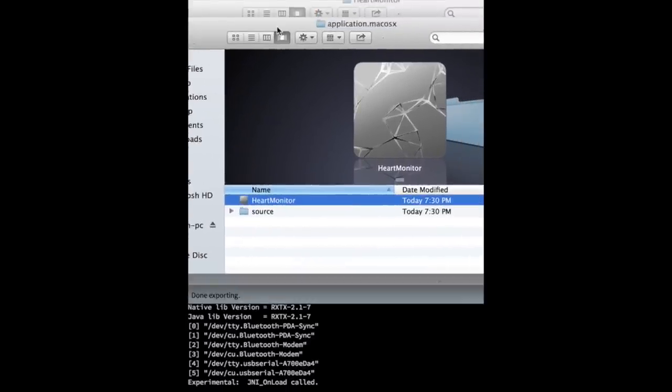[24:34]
Now what we'll do is, before I get into this, on the Mac, I had a lot of problems running it live. Sometimes if the serial port hung up on me or I accidentally pulled the plug on it, it would hose everything up and crash my computer. So I found it easier just to export the application every time to test it. And then it creates a folder here that's the Windows application. By the way, this only works in 32-bit Windows. 64-bit Windows, I don't think it works.
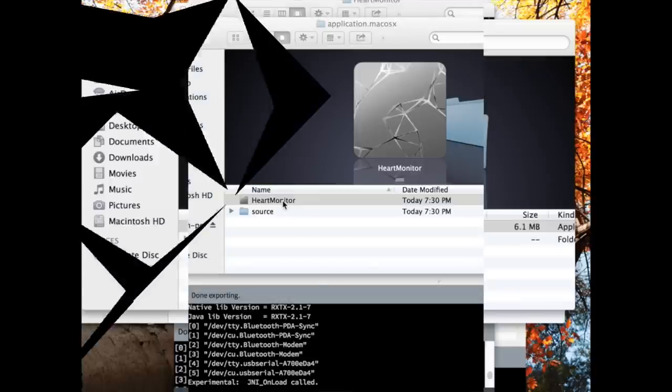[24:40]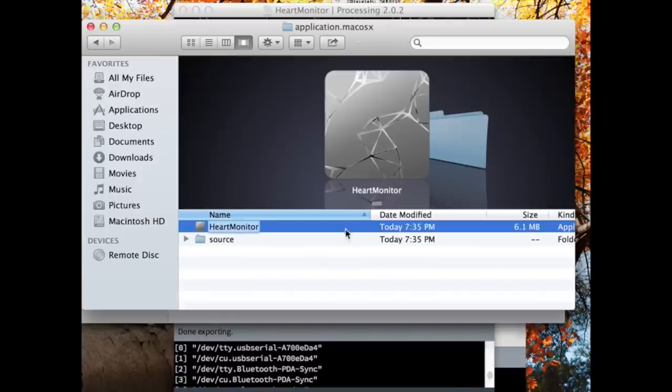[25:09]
Okay, so actually, just as I was recording this, I had a crash just because my serial ports down here actually changed. Instead of 4, now my serial port in the list is 0 from unplugging and plugging back in. They rearranged. That might be just because I also have a USB microphone plugged in. But anyway, once you export the application, it'll be in this folder as an application, and then you can run it.
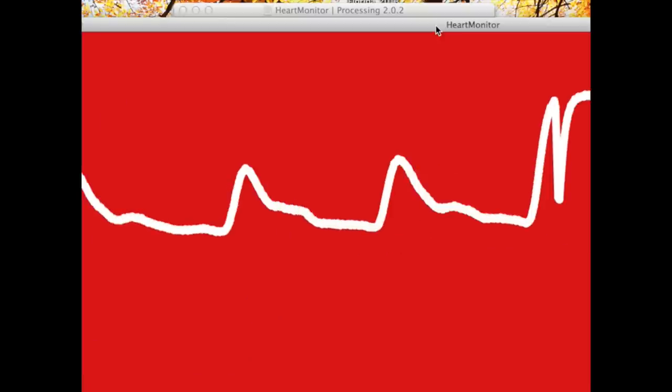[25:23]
And here is the application running. Just as a test, I'll show you that it actually works. Put my finger on it, and there it is. So pretty cool stuff. And that is the project. So good luck with this, and thanks for watching.